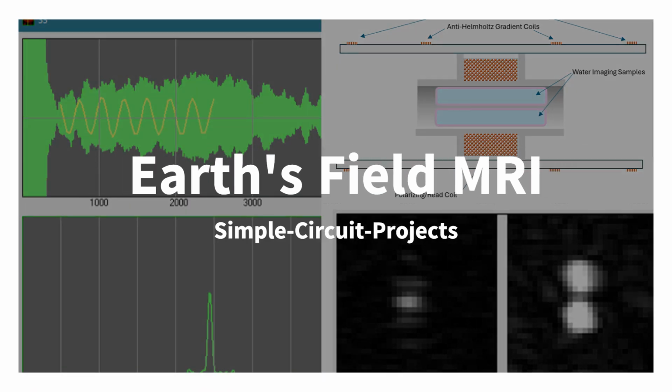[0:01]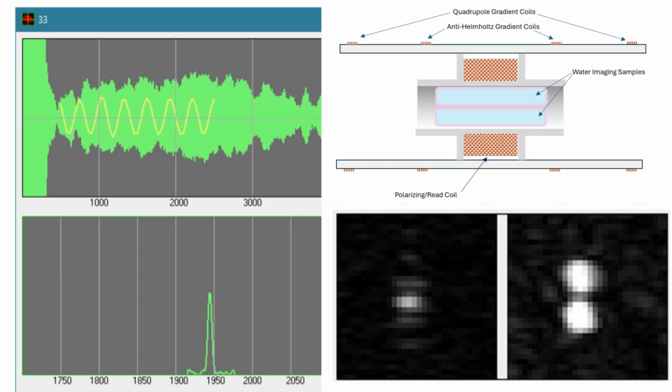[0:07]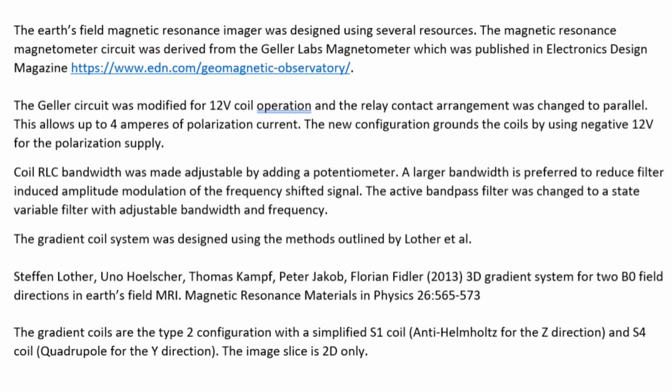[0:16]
This is a short video showing a simple 2D Earth's field MRI. The project consists of gradient coils surrounding an NMR magnetometer. The magnetometer is a modified Geller Labs design.
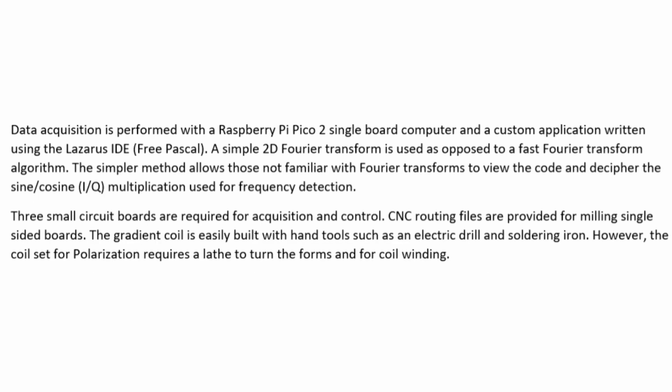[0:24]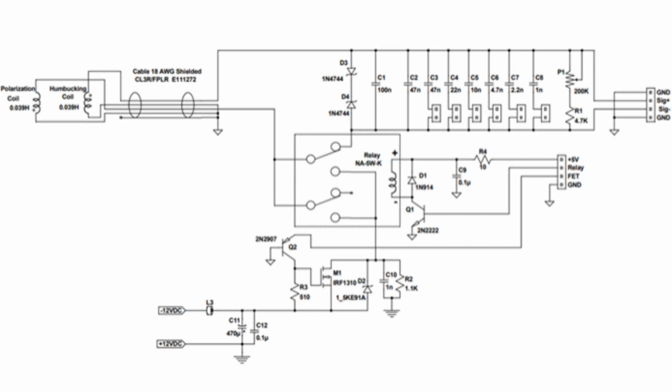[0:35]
Gradient coils were designed per the Lothar et al. research article. 3 small circuit boards provide polarization, switching, amplification, filtering, gradient control, and analog conversion. The polarization circuit is Geller's design modified for common coil grounding and 12-volt 4-amp operation.
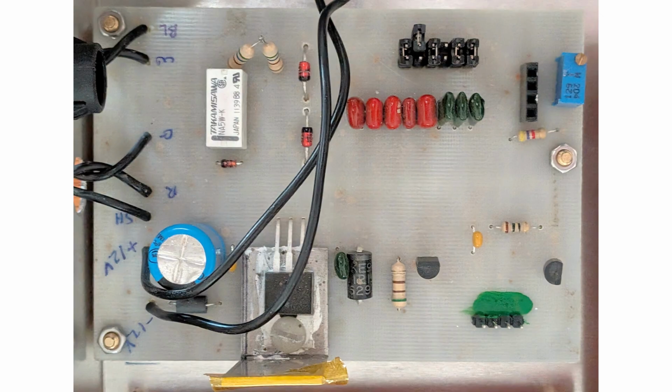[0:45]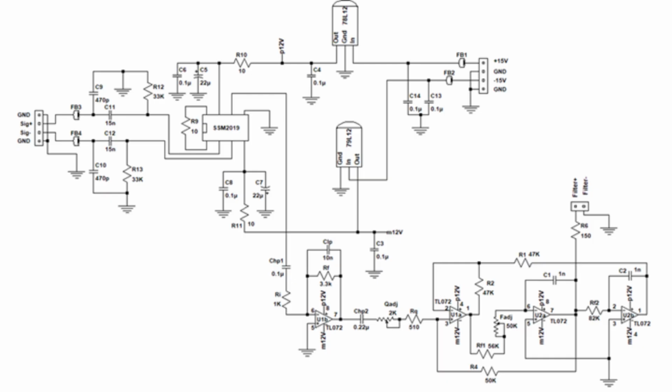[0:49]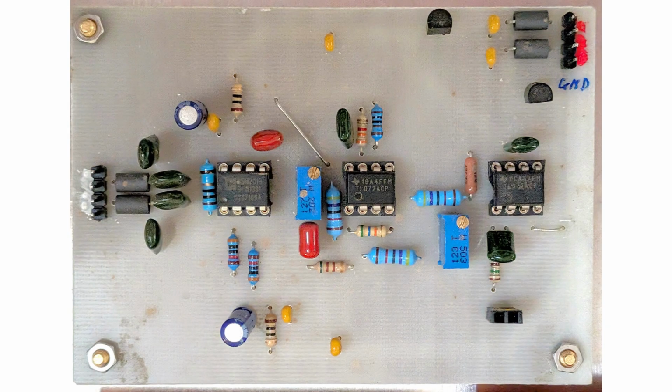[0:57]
This is the polarization and signal switching board. The preamp filter uses a state variable bandpass filter design to allow Q and frequency adjustment. The second board contains the preamp and filter.
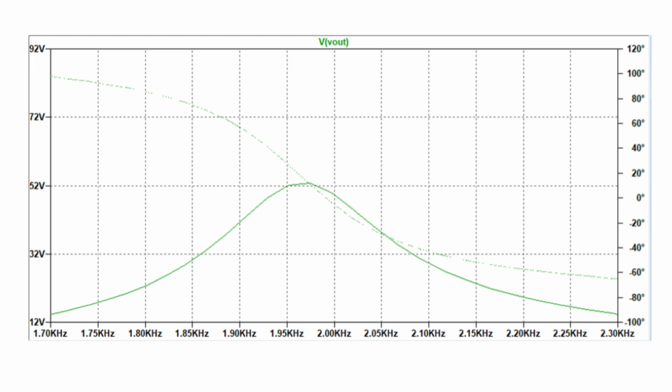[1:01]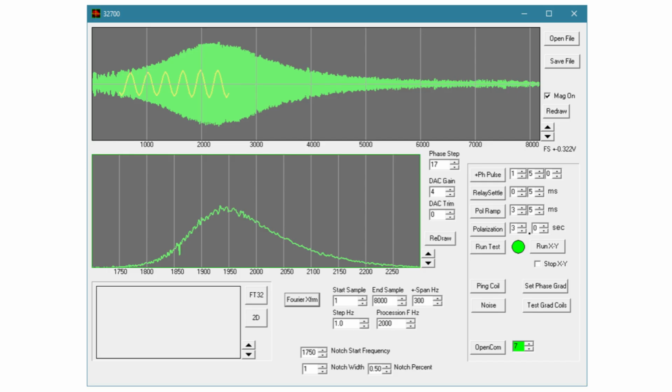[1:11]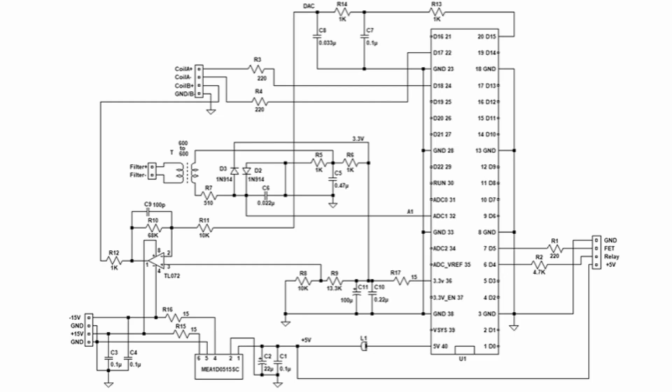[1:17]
Filter simulation shows a gain of 52 at the passband. The preamp is set for a gain of 1000. Pinging the filter shows good correlation to the simulation. The controller uses a Pi Pico 2 for analog and digital I/O.
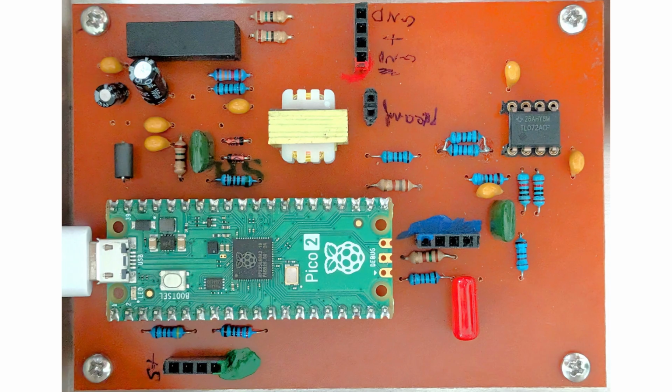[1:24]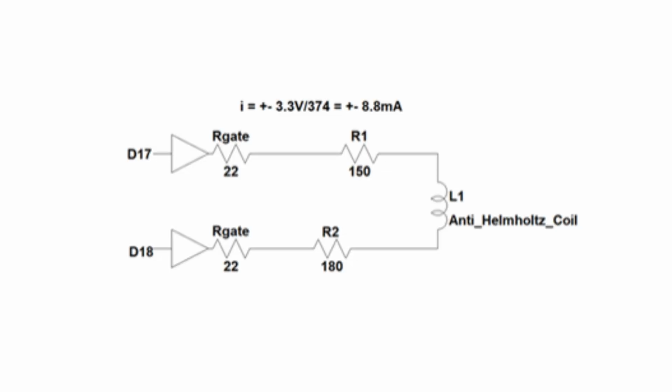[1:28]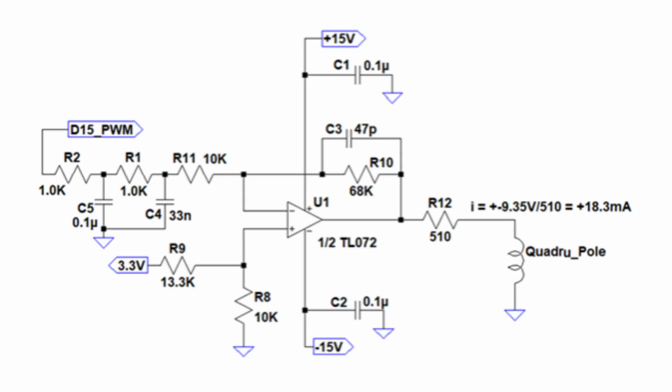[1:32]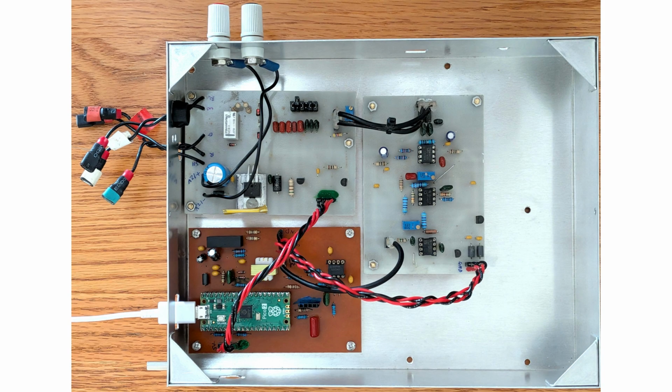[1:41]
Board 3 is the controller. The frequency gradient driver uses a differential digital I/O. The phase gradient driver uses filtered PWM and an amplifier forming a bipolar DAC. 3 cards in a box.
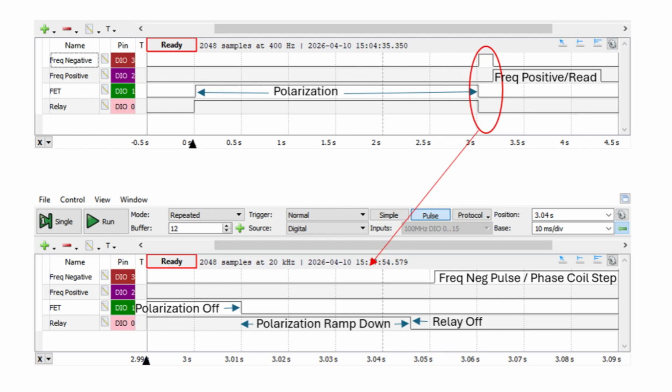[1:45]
For polarization, the relay switches on, then the FET supplies the coil current. When the FET turns off, the relay is delayed for coil discharge. The relay switches to readout, and after a delay, the negative frequency and phase pulse are applied. Phase is zeroed and frequency switched to positive for readout.
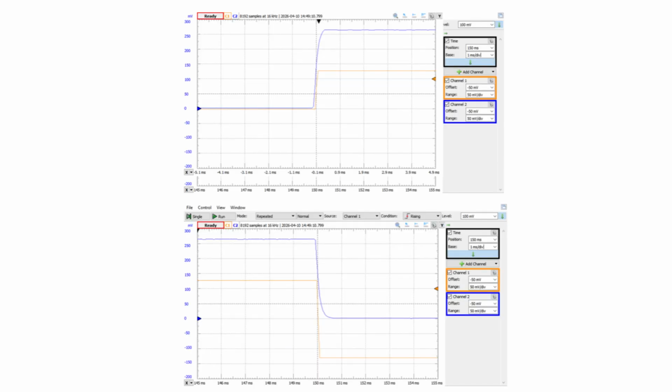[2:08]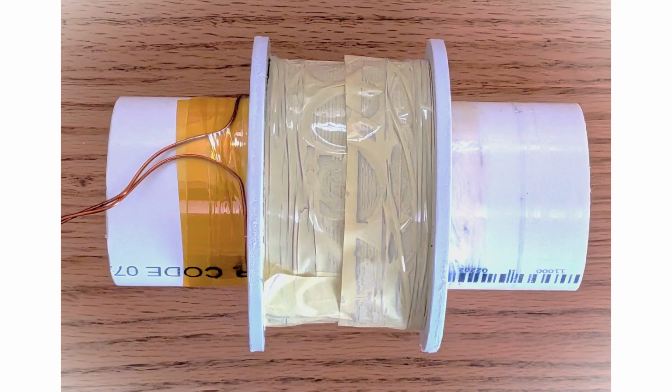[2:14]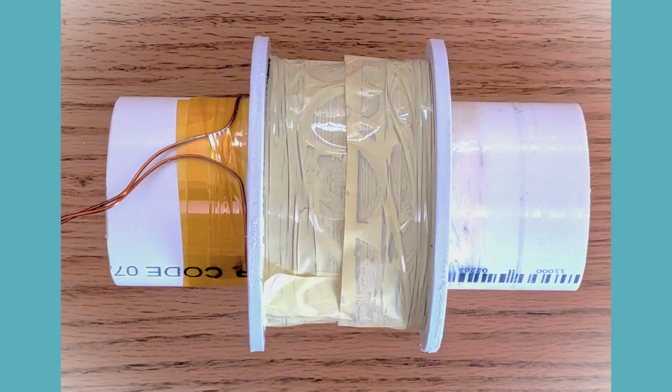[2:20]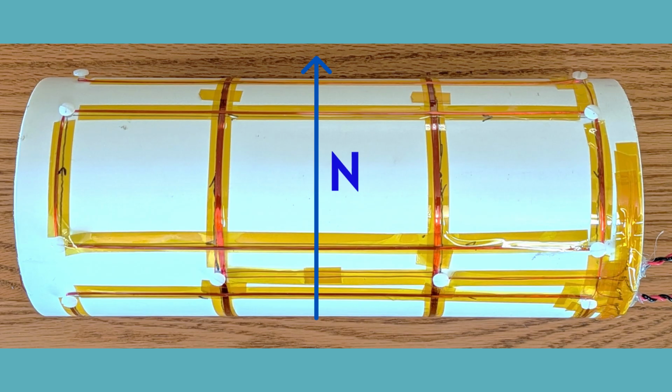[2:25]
The frequency and phase rise and fall are timed to overlap. The polarization and read coil is 600 turns of 18 AWG magnet wire on a 2-inch form. The gradient coils are on a 4-inch form. The tube is aligned perpendicular to magnetic north.
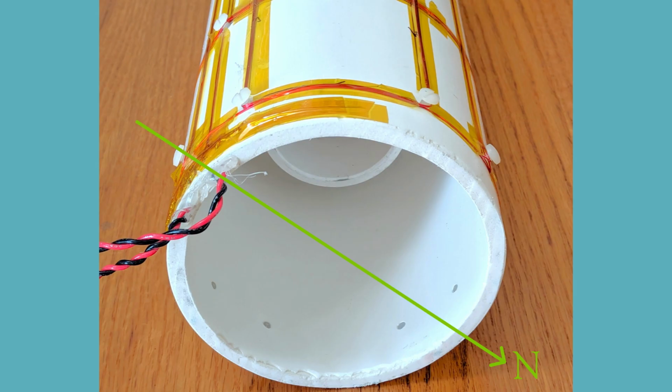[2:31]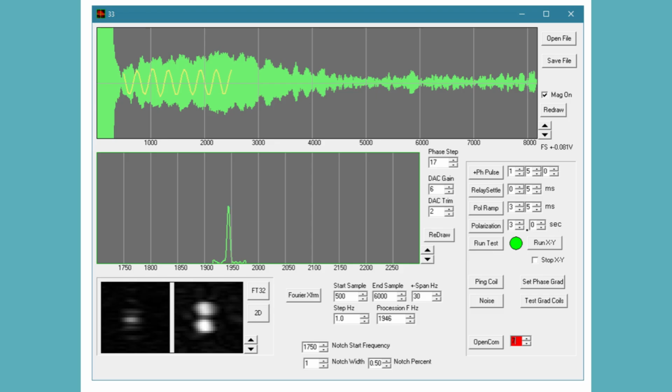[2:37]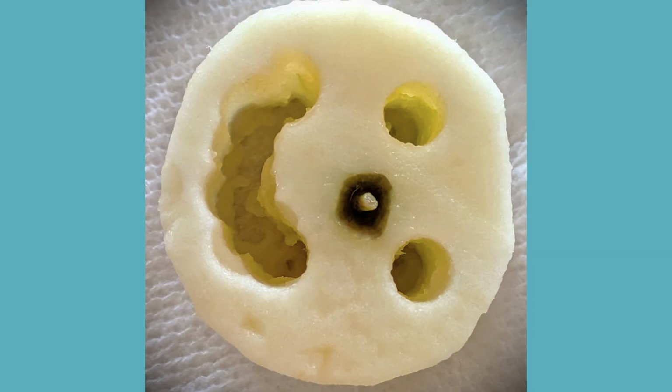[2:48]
The gradient coil rotation is aligned to the magnetic north direction, which points down. An example of 2 water tubes in a vertical position. An example of 2 water tubes in a horizontal position. Test sample from an apple.
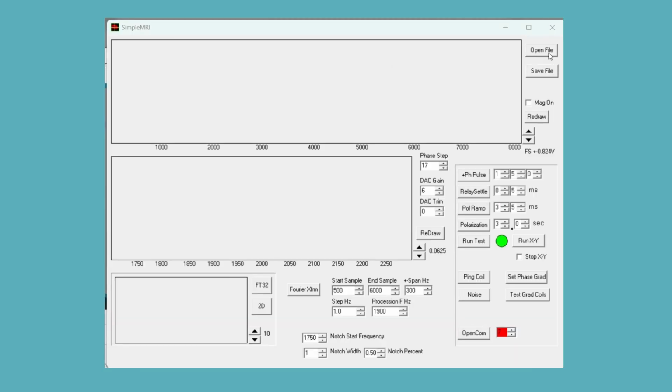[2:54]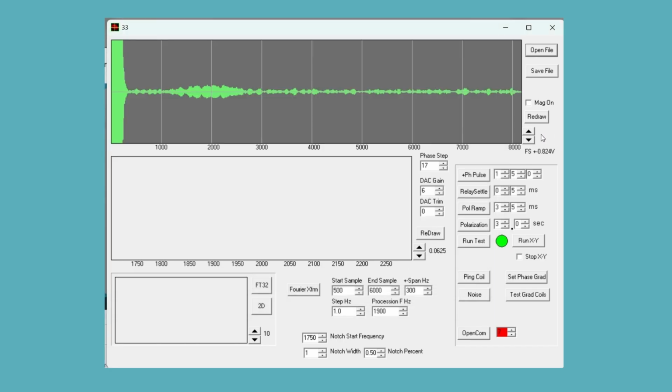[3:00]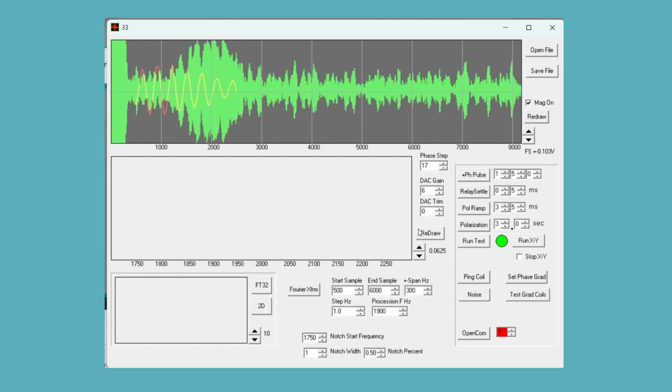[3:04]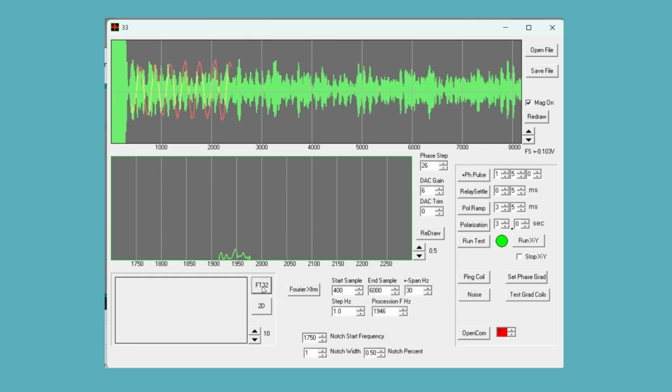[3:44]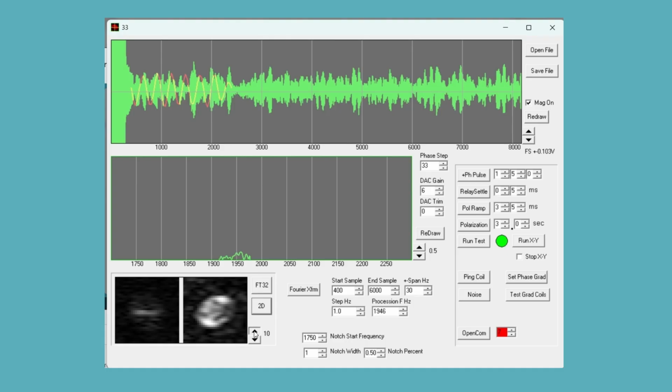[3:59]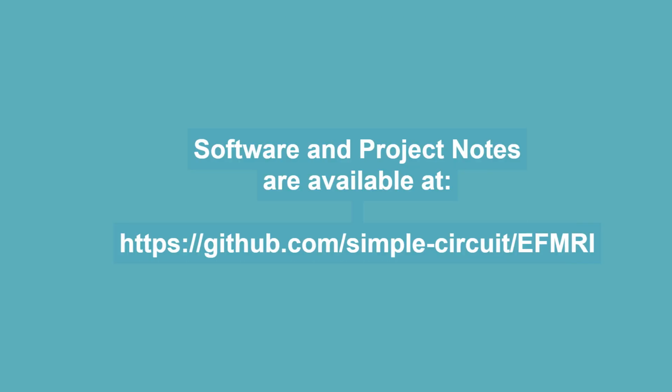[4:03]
Set the data start to sample 400. Start the Fourier transform of the 33 phase scans. Complete the 2-dimensional Fourier transform. More project details are available at GitHub.